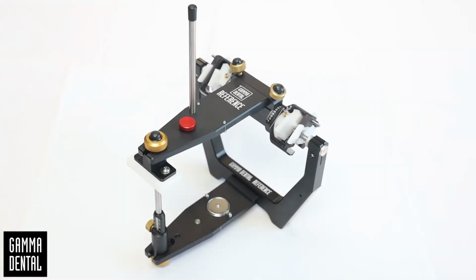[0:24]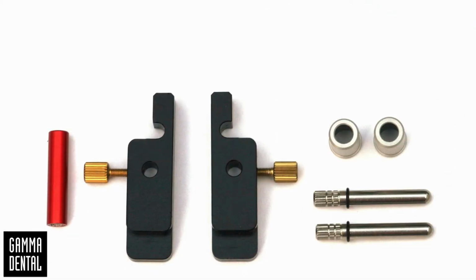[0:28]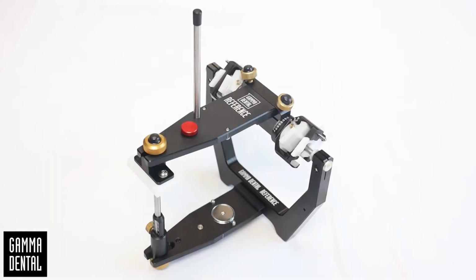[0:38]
Today I would like to show you how to verify and, if necessary, to calibrate the reference SL articulator. For checking the articulator, you need the reference calibration key, the SL adjustment set type 2, and plaster, for example GC Fuji Rock type 4. Or you can use plaster of other brands with a similar characteristic. Now we will show you how to calibrate the articulator step by step.
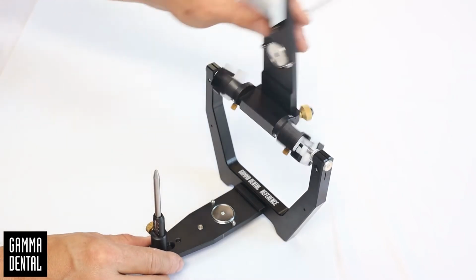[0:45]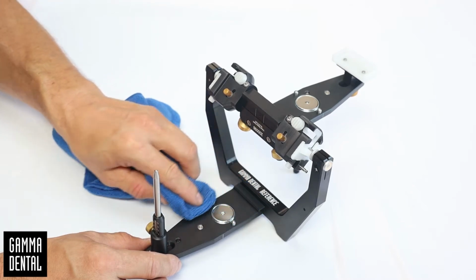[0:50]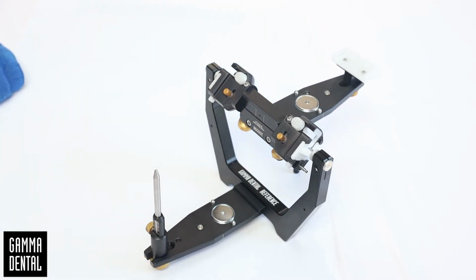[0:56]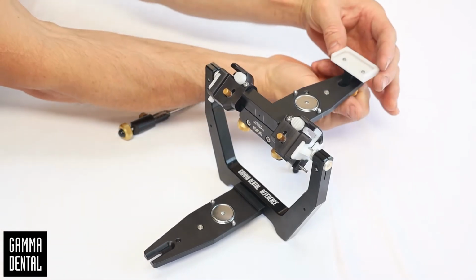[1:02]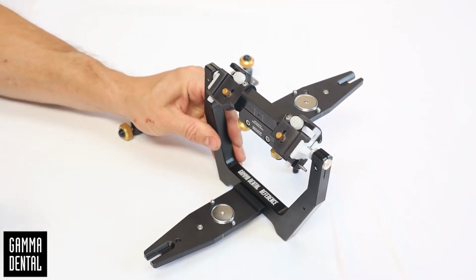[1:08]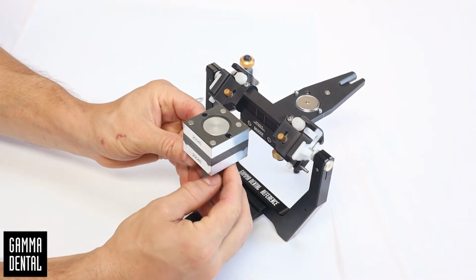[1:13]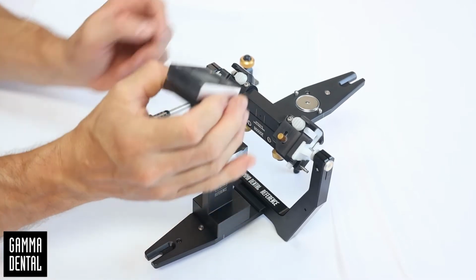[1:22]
Open the articulator and then clean the surfaces around the magnet in the upper and lower articulator part carefully. Remove the incisal pin unit, as well as the incisal table. Put the calibration key into the articulator. Open the calibration key and mount the upper part from the key to the upper part of the articulator. Do not close the articulator when the calibration key is closed. This can damage the key.
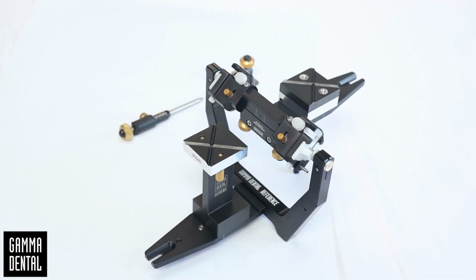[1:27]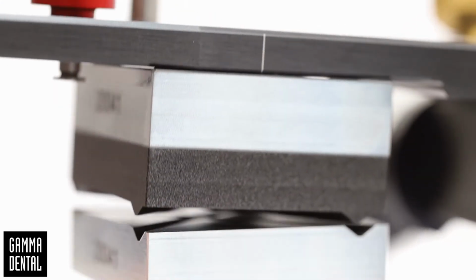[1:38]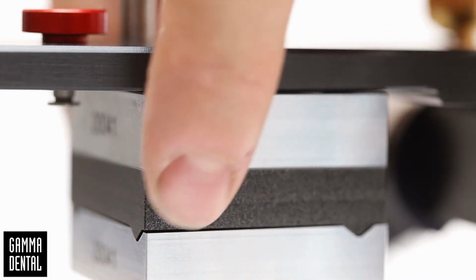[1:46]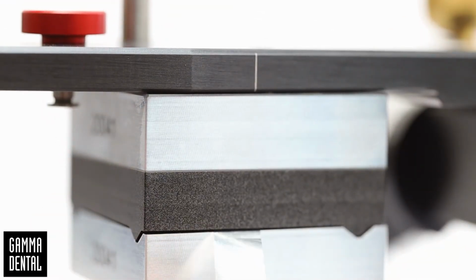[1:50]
Check if the calibration key closes well and solid. There should be no gap between the upper and the lower part of the key. You can check if there is a light gap between the upper and the lower part of the key, or you can check by hand if you can feel a difference, or you may use a shimstock foil for verification. Obviously, this articulator does not fulfill the precision requirements and needs calibration.
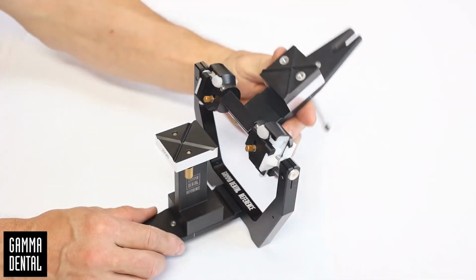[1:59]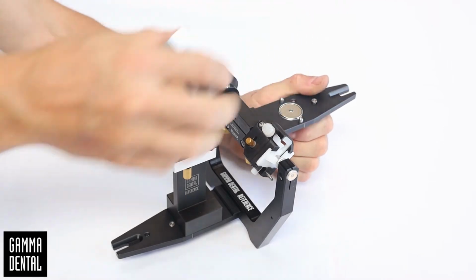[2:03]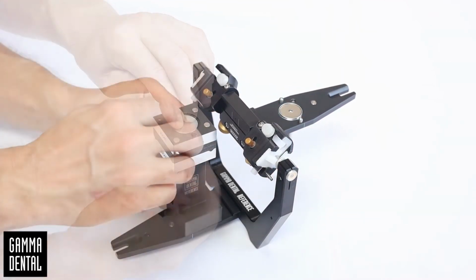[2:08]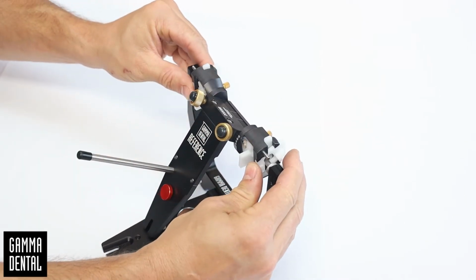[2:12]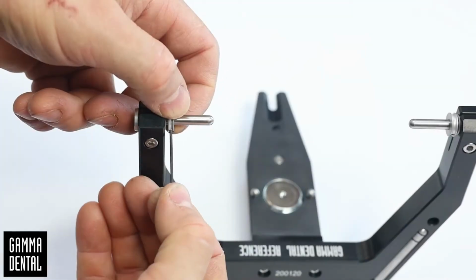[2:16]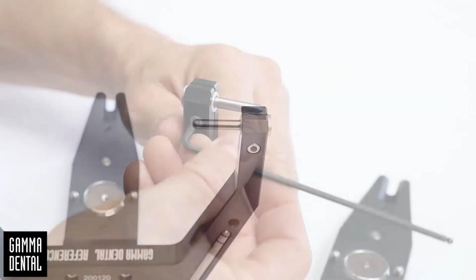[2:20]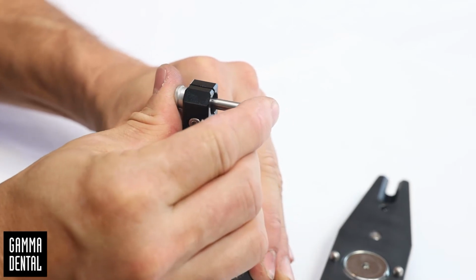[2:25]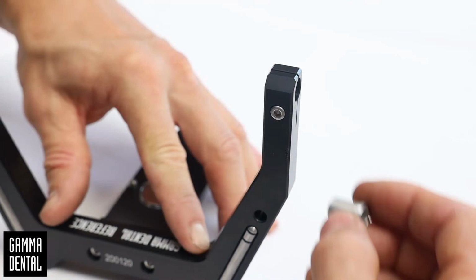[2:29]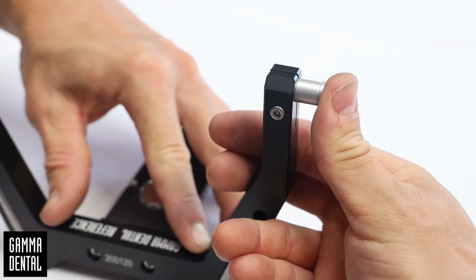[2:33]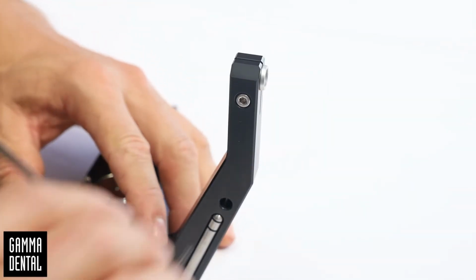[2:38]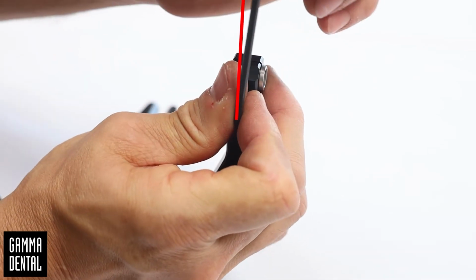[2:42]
Open the articulator and remove the calibration key. Separate upper and lower parts of the articulator. Remove the retaining collars on both sides. Remove the old axis and casings on both sides. Insert the casings on both sides from the outside into the guides and screw them tightly. The wrench should be turned a further 25 degrees from the first pressure point.
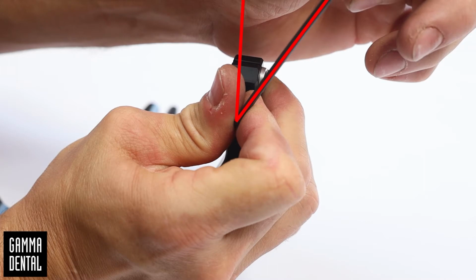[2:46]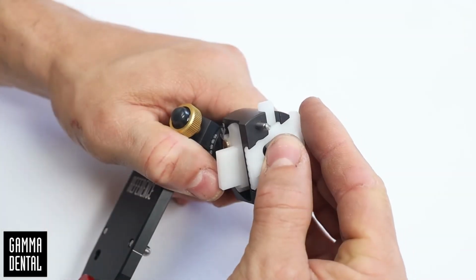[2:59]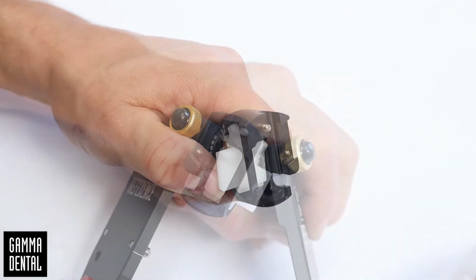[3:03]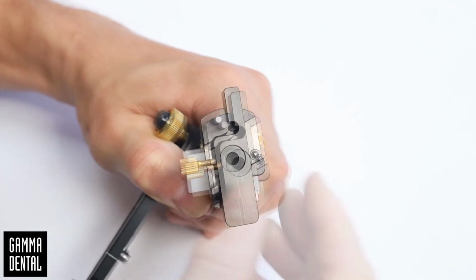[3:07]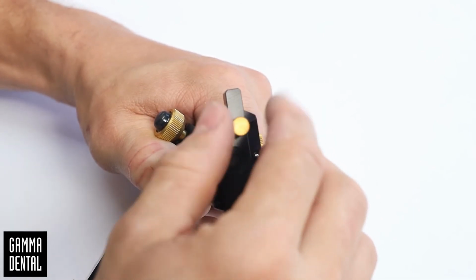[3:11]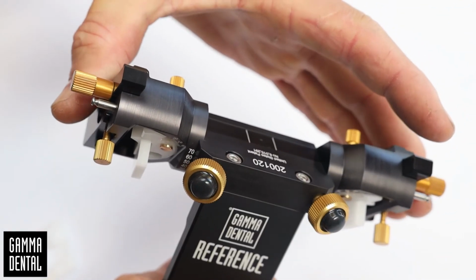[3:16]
Insert white TCI elements into the condylar housings. Adjust the angle at 40 degrees SCI and 10 degrees TCI. Remove the centric locks and the SCI inserts. Attach the adjustment blocks and close the fixing screw. Take care that the adjustment blocks are mounted parallel.
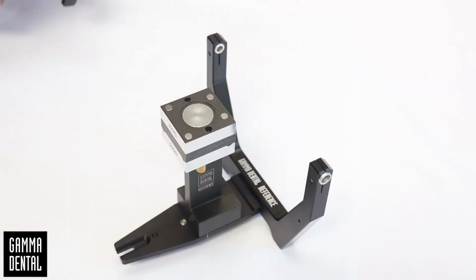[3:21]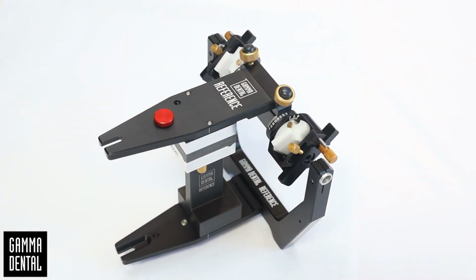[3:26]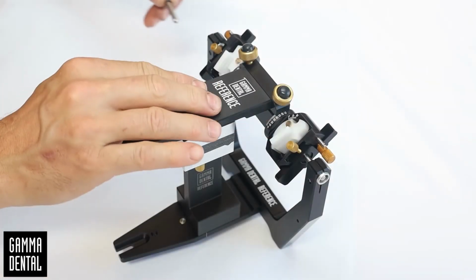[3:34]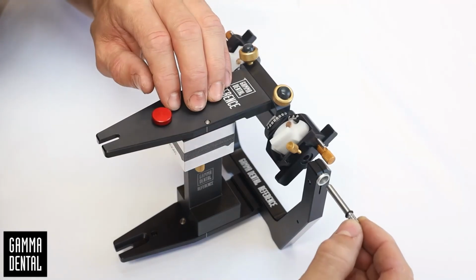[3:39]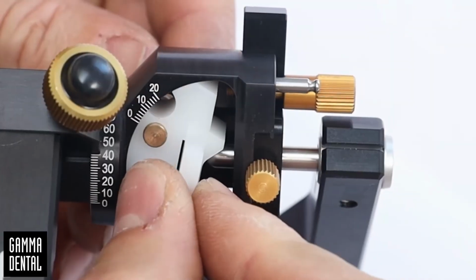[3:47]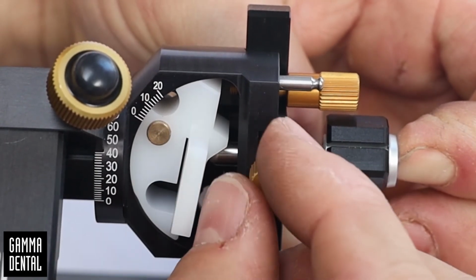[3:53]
Insert the calibration key to the lower member of the articulator. Mount the upper member. Move the O-rings of the articulator axis into a slightly medial position. Insert the axis into the guide of the adjustment blocks. Apply moderate counter pressure with the other hand. The axis has to be in precise contact with the TCI insert. Take care that there is no movement between the TCI insert holder and the condyle housing. Close the screw to fixate the axis.
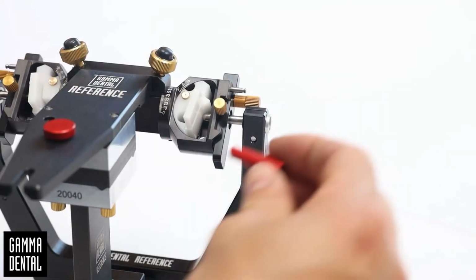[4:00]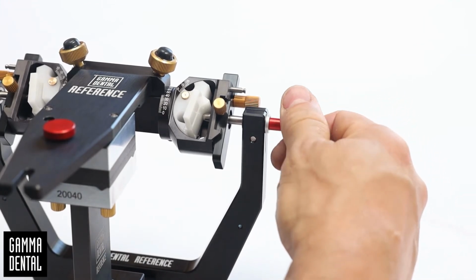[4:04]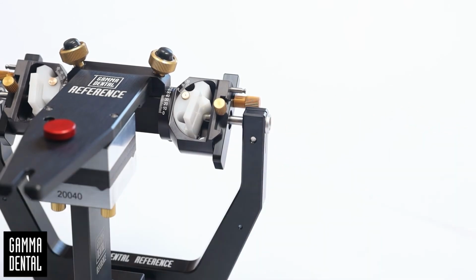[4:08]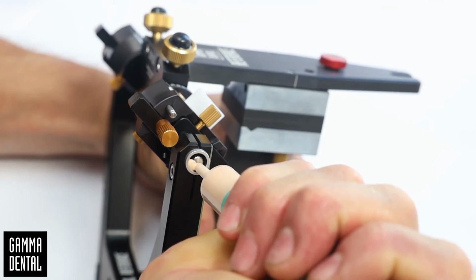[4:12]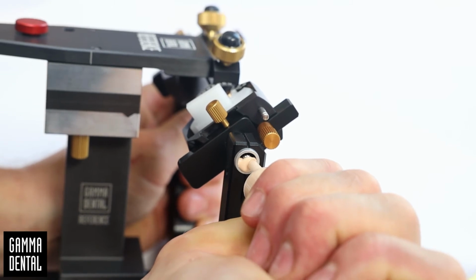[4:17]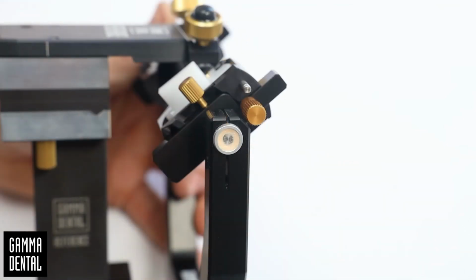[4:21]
Slide in the centric O-ring using the red casing. Make a rotary movement for an easier application of the red casing. Fix the axis with plaster on both sides of the articulator. The plaster should have a quite viscous consistency. Wipe off the overflow. Allow the plaster to harden for 30 minutes at least.
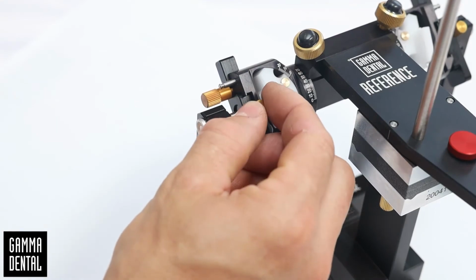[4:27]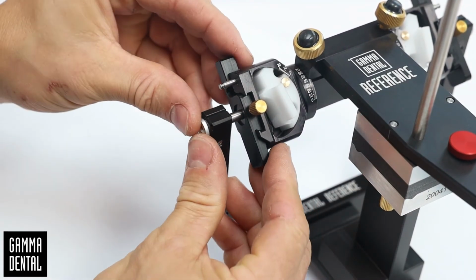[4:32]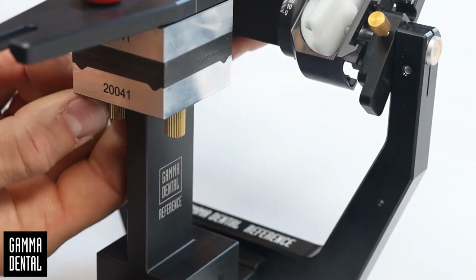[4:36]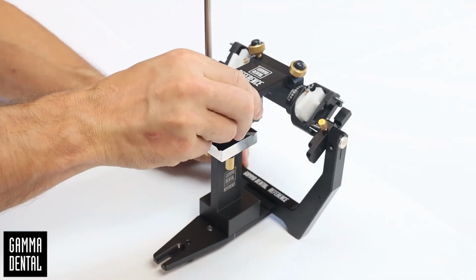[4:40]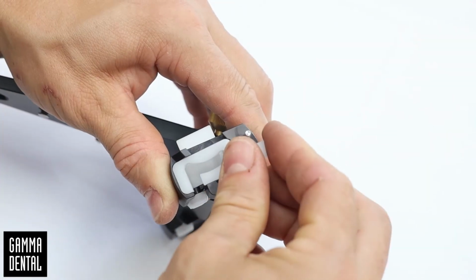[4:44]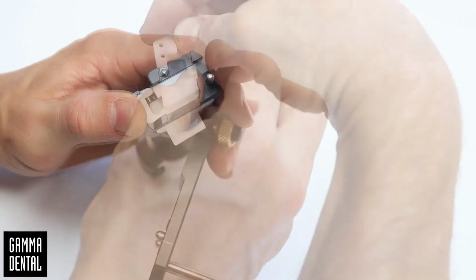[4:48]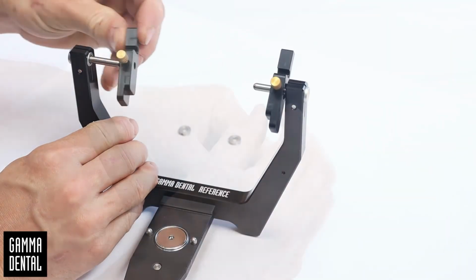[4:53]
Then open the screws from the adjustment blocks and remove them in outward direction. Open the adjustment key and remove the upper part of the articulator. Equip the condyle housing with a white SCI insert and a centric lock. Remove the adjustment blocks and attach the retaining collars to the axes.
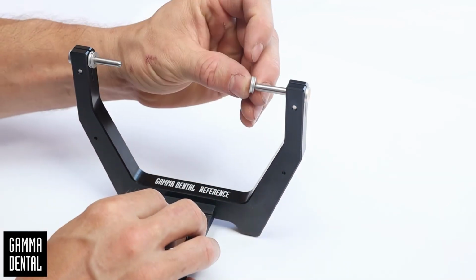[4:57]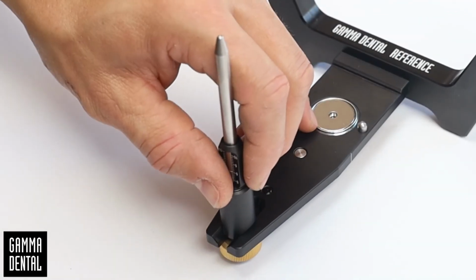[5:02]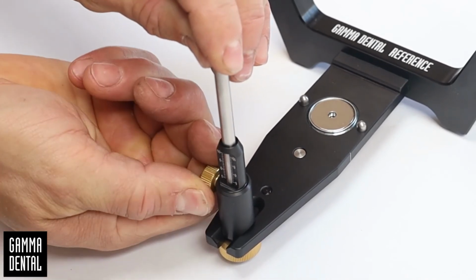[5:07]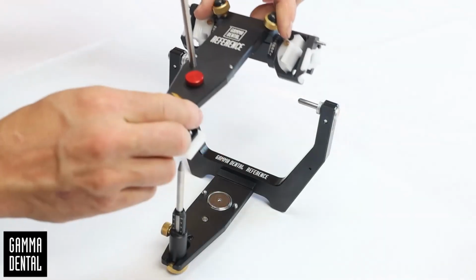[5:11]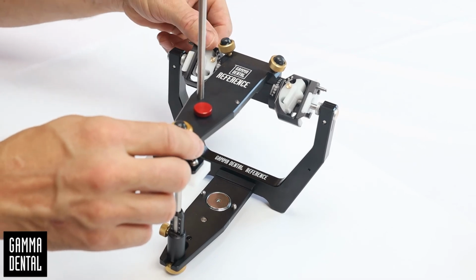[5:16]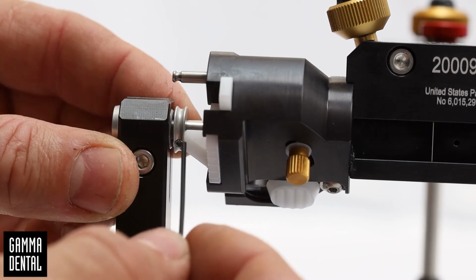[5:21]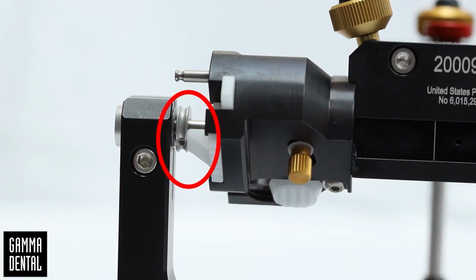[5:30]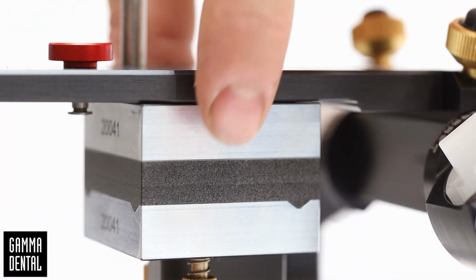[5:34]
Mount the incisal pin unit and slide the incisal pin to the lowest position. Mount the incisal table. Connect upper and lower part of the articulator and close the centric lock. Move the retaining collars to the centric locks and fix them with an Allen key from back and below. Make sure that there is no gap between the collars and the centric lock. Finally, check if the calibration key closes well and solid.